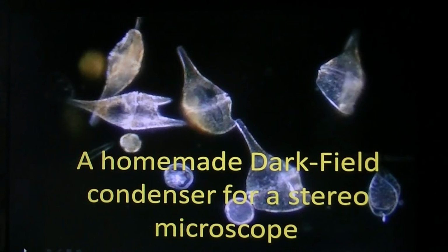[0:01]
There are several YouTube videos showing how to make a dark field condenser for a compound microscope. In this video, I focus on making a dark field condenser for a stereo microscope. But first, a few words about a compound microscope.
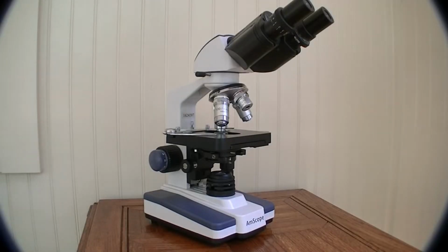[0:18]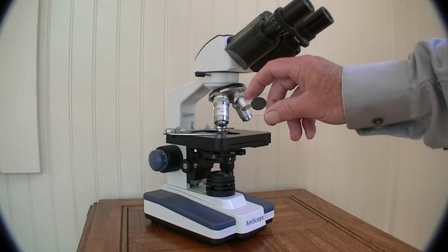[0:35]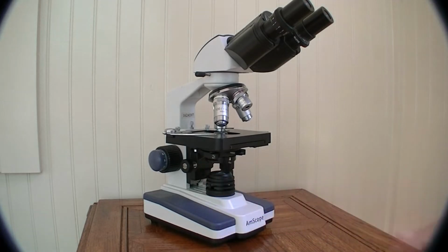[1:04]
Making a dark field patch stop for a compound microscope is normally straightforward, especially if there's a filter holder on the condenser. So all you need is to make a small patch from some black electrical tape and a transparent food container. Just draw a circle about 32 millimeters in diameter to make the transparent patch, and then add a center circle made out of black electrical tape that you can cut from something like a dime to get a 17 millimeter circle. Just pop that into the filter holder, and make sure the condenser iris is fully open, and then put your sample on the stage and rack the condenser up so you get the dark field effect.
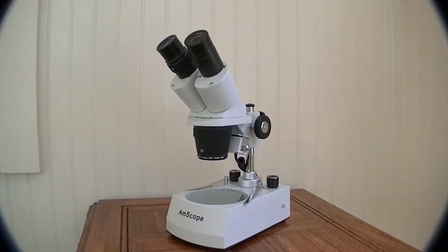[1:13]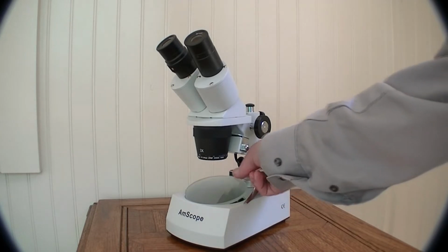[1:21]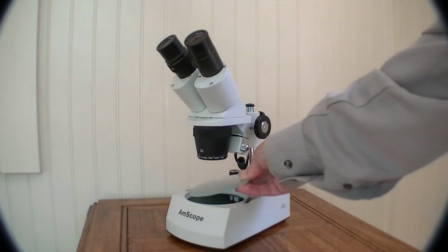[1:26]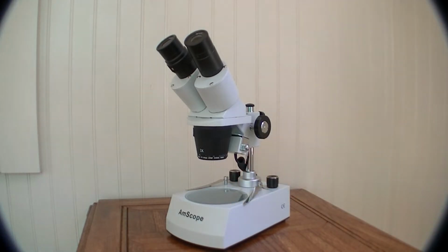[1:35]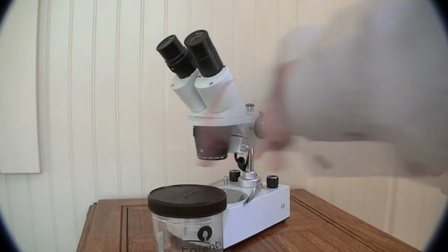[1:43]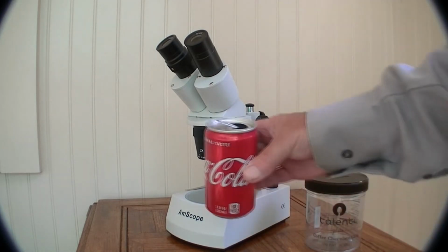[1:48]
Making a dark field condenser for a stereo microscope is a little bit more involved because there's no condenser. Most stereoscopes have a plate, 95 mm diameter, sitting just above a light, these days often a little LED light. So we have to make a condenser to get the dark field effect. That can be fairly straightforward. All you need is a jar like Talenti ice cream that's got a lid that's 95 millimeters diameter, and a Coke can that's got a nice reflective internal surface.
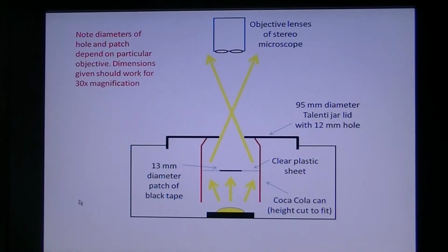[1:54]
So here's the summary of the dark field condenser. It's made from a lid that sits over the top of the microscope and acts as a stage. There's a Coke can or some other soft drink can that's got a shiny inside. This is the top of the can that has been cut off and then stuck with tape. And then the final component we need is the backstop, which is a piece of electrical tape, a round circle, stuck on a bigger diameter, clearer plastic sheet. And again, we can stick this inside the condenser using clear tape.
So the principle is that the direct light from the lamp is blocked, but the light that comes from the side reflects off the side walls of the Coke can and goes into the sample here, but that background light misses the objectives. So the objective sees just a black background unless there's something in this region to scatter the light.
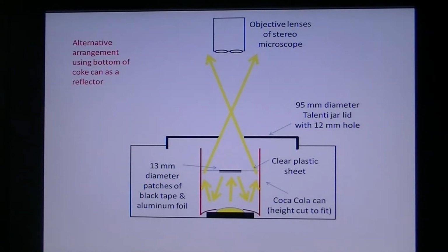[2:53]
An alternative arrangement is to use the bottom of the Coke can with a hole in it, and this now sits on the light source. Again, we need a black patch about halfway between the sample and the lamp to optimize the amount of reflected light. In this case, we put a bit of foil on the underside to reflect the upcoming light, which then hits the Coke can that's got this convex shape, and that reflects up the side walls again. So depending on the space, either stick the Coke can to the lid jar or rest it on the lamp, or you can do a combination of both.
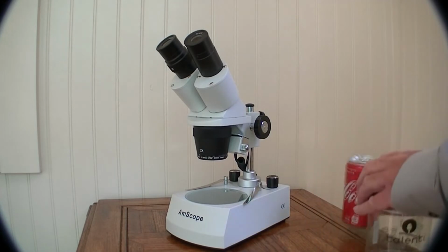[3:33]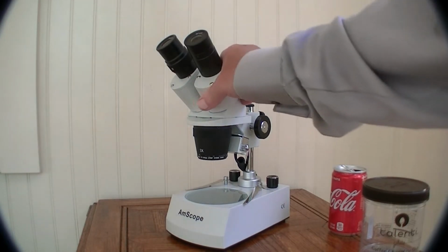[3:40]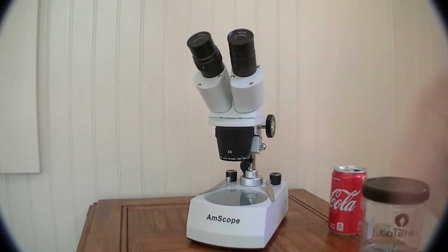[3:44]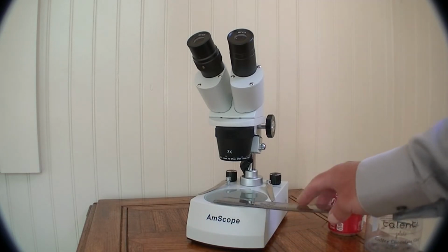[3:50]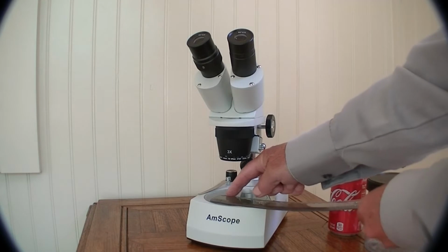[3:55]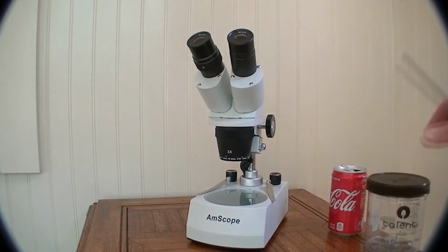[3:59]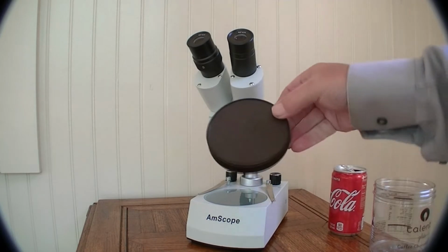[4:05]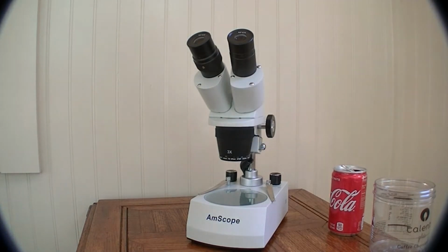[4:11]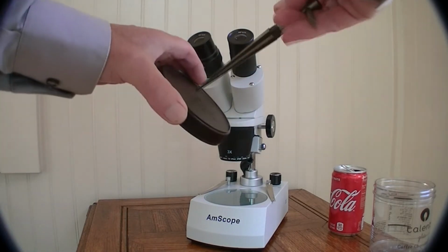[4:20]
So the first thing we do is we check the field of view, and we're going to make a condenser that works with the 3x objective, 10x eyepiece, so we've got 30x magnification overall. So we put a ruler under the microscope and just check how much we can see, which in this case turns out to be 12 millimeters field of view. So we take our ice cream container, which conveniently has a little dimple in the middle, and then just drill out a 12 millimeter hole. And that I've done using a drill, followed by using a reamer just to enlarge the hole to 12 millimeters.
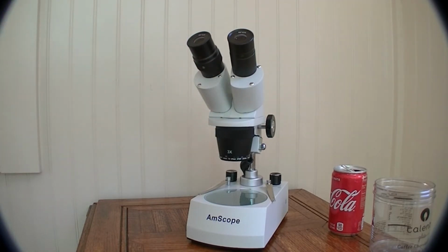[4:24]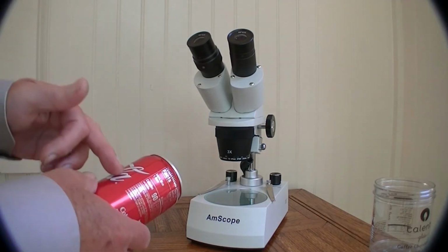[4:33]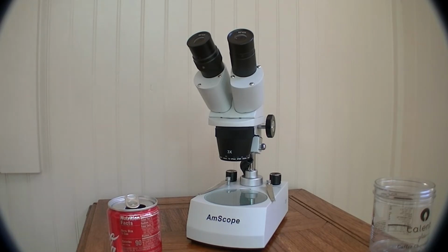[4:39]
The Coke can we need to cut. We can remove the top with a tin can opener and then just cut, and scissors work perfectly well. I find it quite useful to use some masking tape just to get the height right.
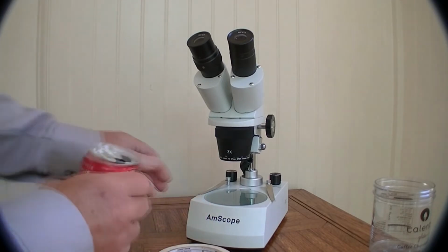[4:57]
And also this stops the can from kinking. The height we need to make... There's two ways we can design this.
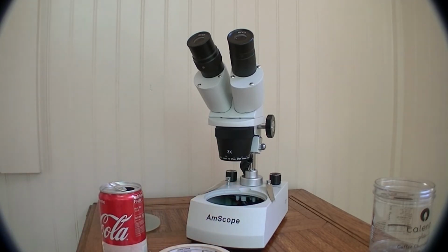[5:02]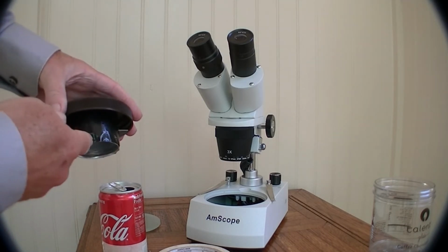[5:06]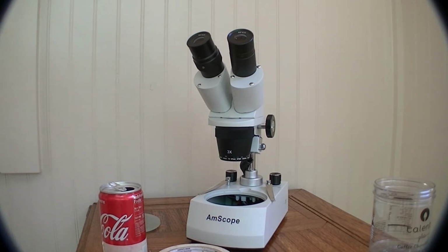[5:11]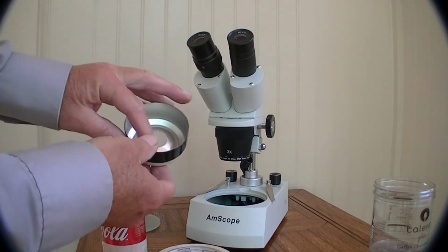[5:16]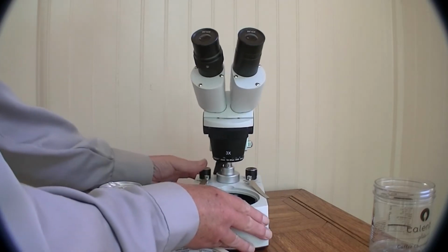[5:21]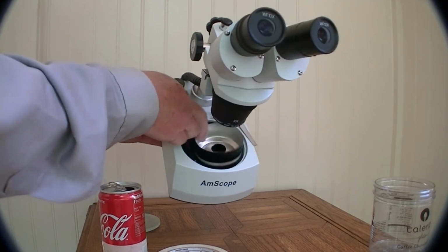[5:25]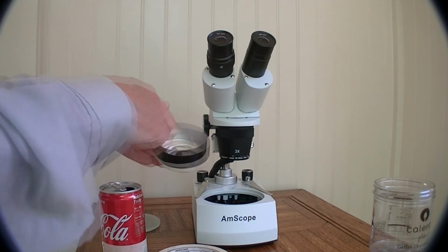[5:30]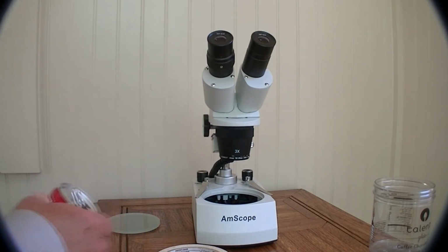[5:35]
We can either stick the Coke can on the inside of the lid and then position our stop in the middle here, or we can take the bottom of the Coke can and cut out a hole which will sit nicely over the LED light in the microscope. And this has the advantage that it will reflect extra light up from the bottom. So either way should work.
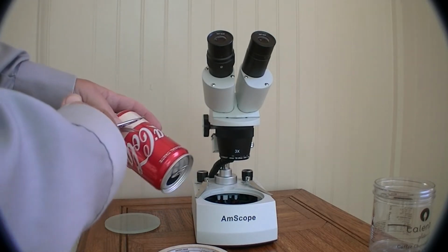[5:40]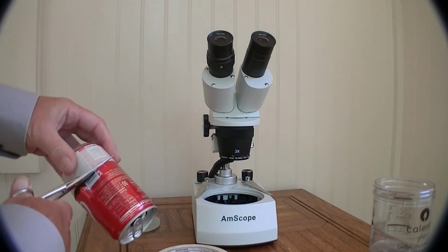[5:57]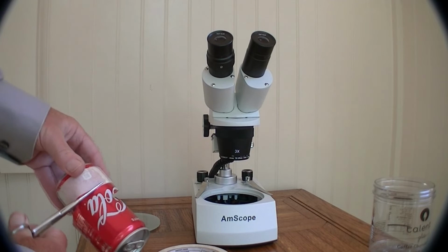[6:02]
Cutting a Coke can is straightforward. Best just to go into the height you want, mark with the tape, just stick some nail scissors in, and then cut. Once you've gone round once, you can go around and smooth it off. The Coke can be a bit sharp, so careful not to... So that's our first attempt, and now we can clean up. Making a nice smooth cut.
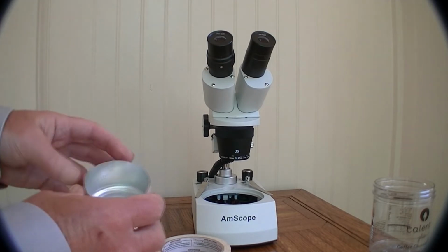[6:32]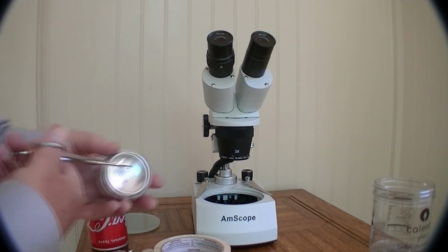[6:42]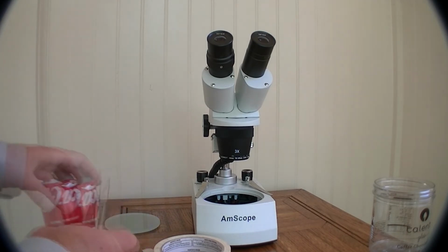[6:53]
Okay, so for this case we can drill a hole in the bottom here. Needs to be, for my light, 22 millimeters diameter. Again, you can do that with scissors. Best to just drill a hole to start with and then carefully cut round in a spiral, having marked your diameter there. So that's a bit more tricky to do, but possible.
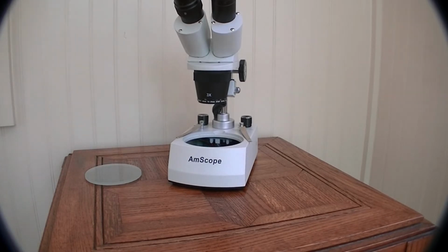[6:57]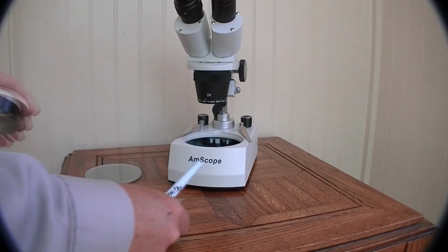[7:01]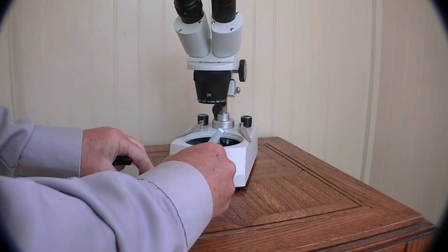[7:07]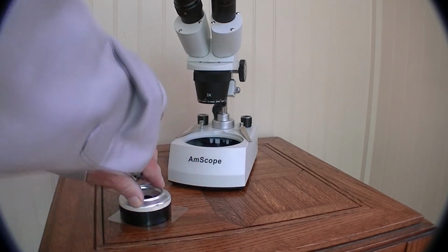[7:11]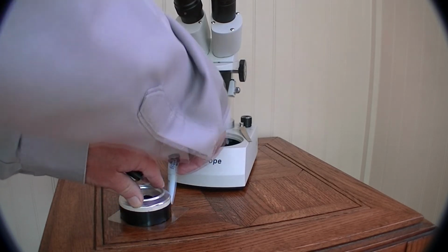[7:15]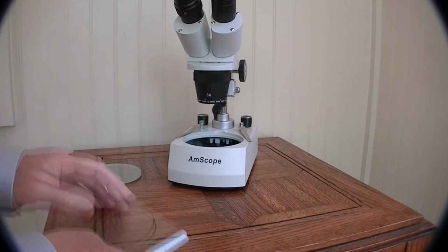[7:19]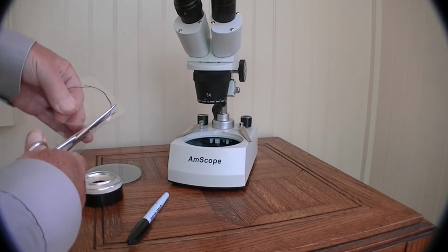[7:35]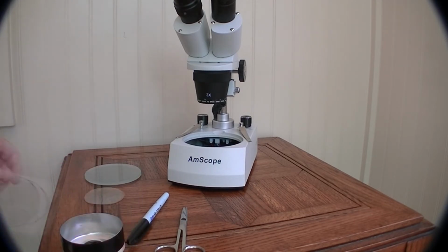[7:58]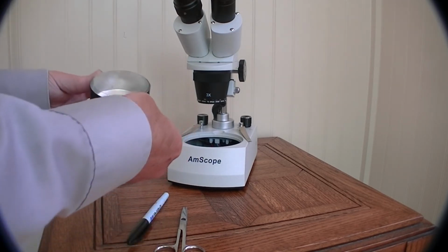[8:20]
So now we need to make the patch stop. So take our clear piece of plastic from a food container, place our Coke can, and just mark the diameter. Cut round the inside of the circle so that it just fits snugly inside the can. Okay, which we now stick with a piece of clear tape. So now we've got our clear circle.
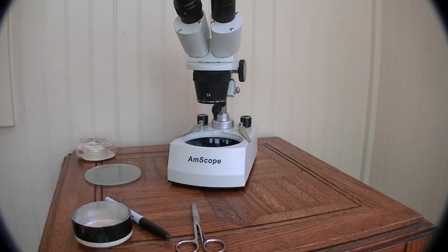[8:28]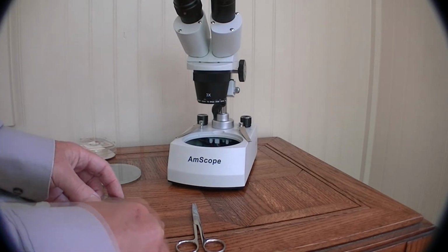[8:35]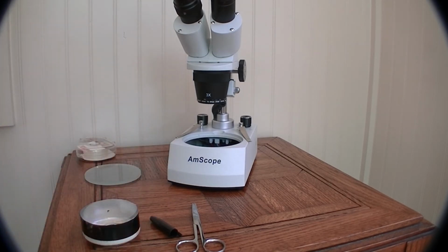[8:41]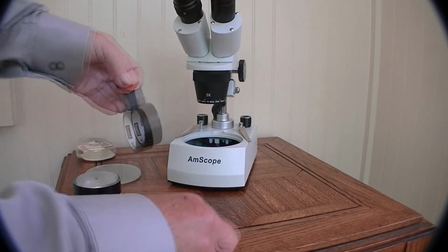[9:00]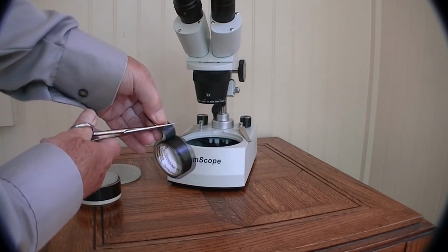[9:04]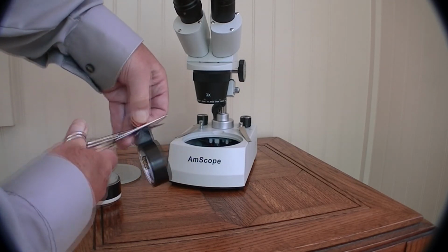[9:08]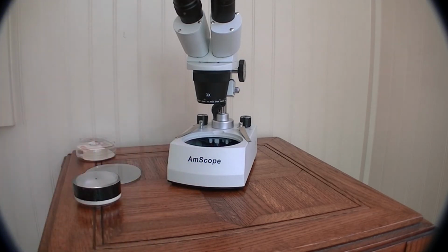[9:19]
Now we need to put the patch stop in the middle, so we measure the centre. So there's the centre point. We take our piece of tape, cut out using a penny as a template. And then to position the patch stop in the right place, I find it best to use tweezers.
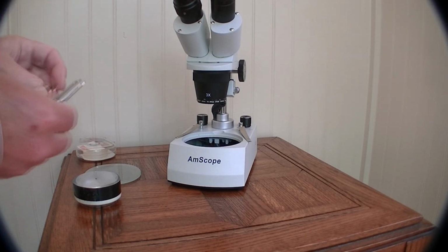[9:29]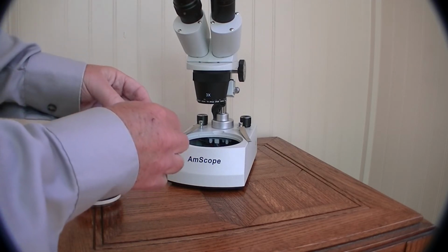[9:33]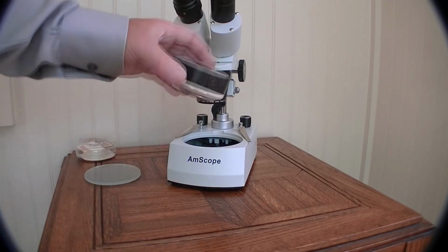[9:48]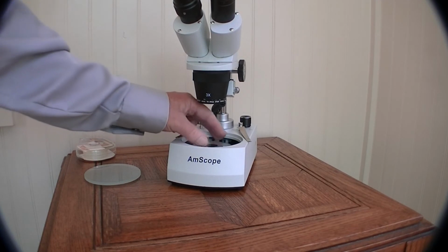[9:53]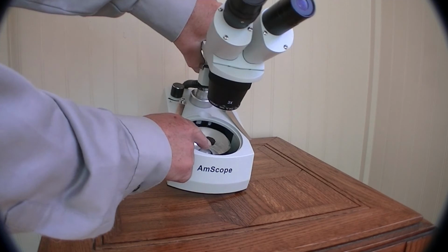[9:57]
So just lift the tape off and then center it over the dot. And that's now your dark field condenser, just resting on the bottom. So that sits in the microscope like that.
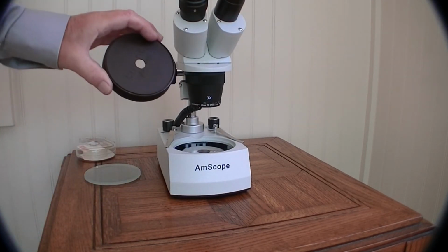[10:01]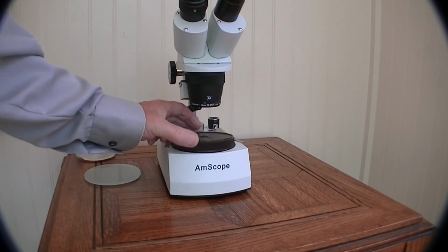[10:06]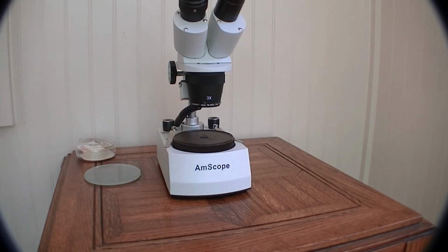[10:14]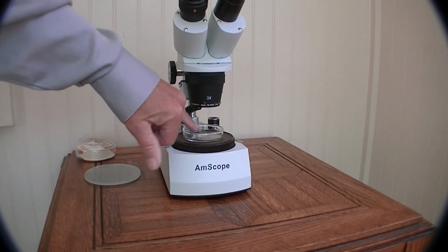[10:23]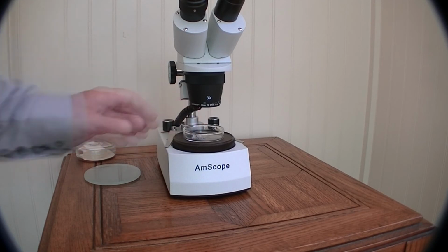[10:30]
And then we place our stage on top there, and now when we turn the light on we should just get a cone of light coming out either side, but nothing directly into the objective. When we put our sample on, say a petri dish containing pond water, then the little bugs swimming around will reflect the light into the sample and you'll see the bright objects on a dark background, a dark field illumination.
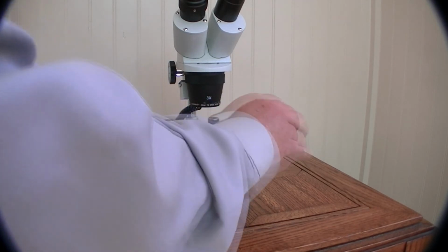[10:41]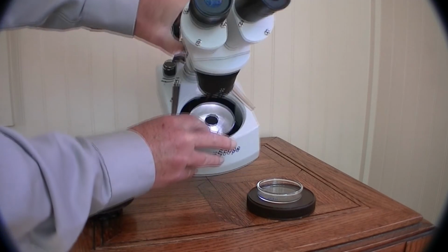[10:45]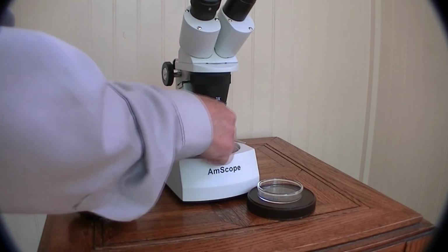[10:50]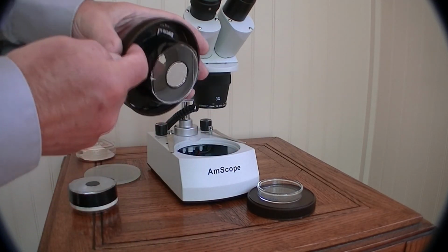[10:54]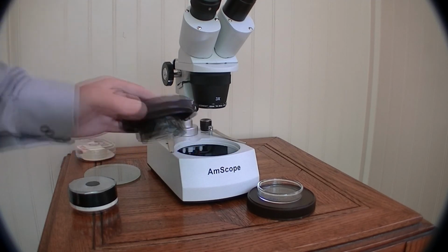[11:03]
An alternative way, depending on the shape of the light, whether you've got access to put in this dark field condenser, there you can see it in operation, is to just tape the backstop onto the top of the ice cream lid, and that then will just rest on the top. So it really depends on how much space you've got, which design works, or you can use a combination of both.
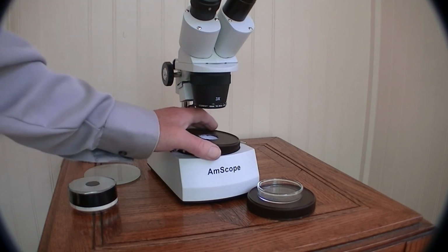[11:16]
The other thing you can do is put a piece of silver paper or aluminium foil on the bottom end of the stop. That will reflect the main beam down and give you extra light if you need it. That's not really necessary, but something you can do. So that's dark field illumination.
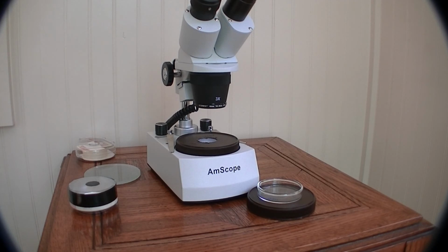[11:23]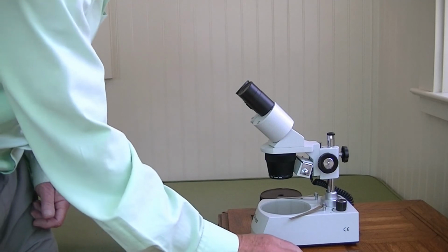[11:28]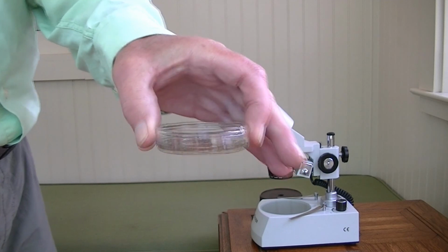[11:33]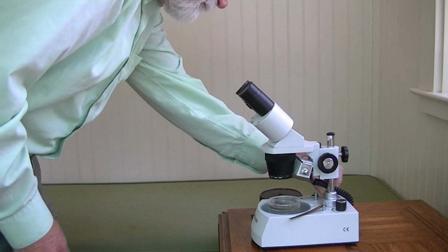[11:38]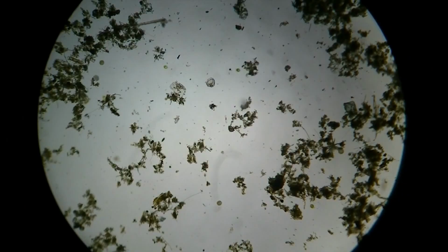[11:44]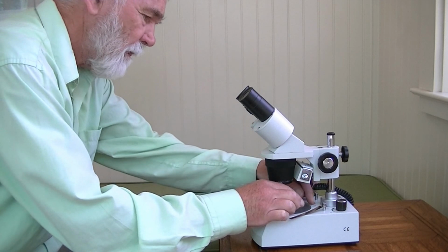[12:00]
So let's check out how it works. So I have a sample here of some pond sludge. We look at bright field first. And I see brown sludge with a few microbes swimming around, but you see there's a very bright background in this mode of illumination. Now let's switch to dark field.
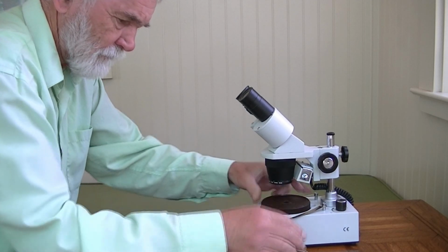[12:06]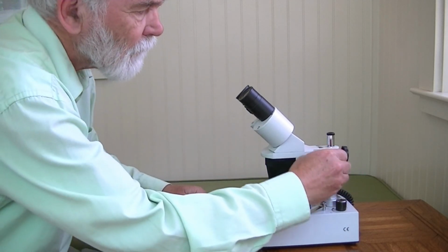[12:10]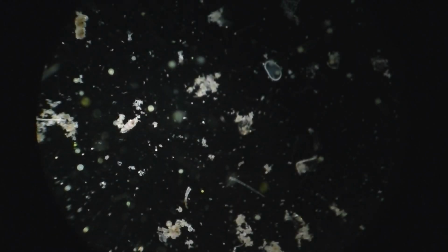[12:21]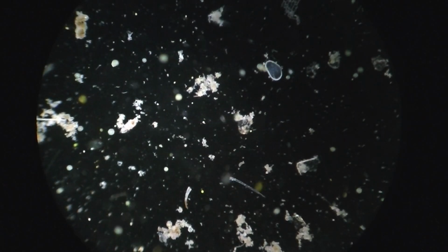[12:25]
So this is now dark field and I see nothing, but if I turn up the illumination, we now get microbes and the sludge backlit in dark field illumination. You can see a lot more in terms of motile organisms.